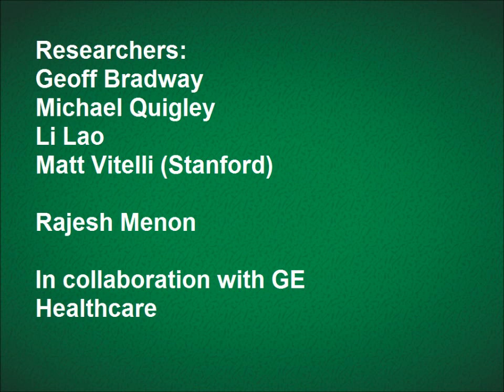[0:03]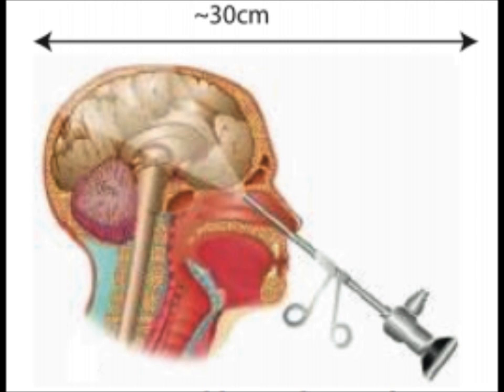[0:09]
In this project, we are interested in tracking the tip of a surgical instrument, such as an aspirator, within the volume of a human head. The volume of interest is approximately 30 centimeters by 30 centimeters by 30 centimeters. There are two relevant surgical instruments, and these are approximately 14 centimeters long.
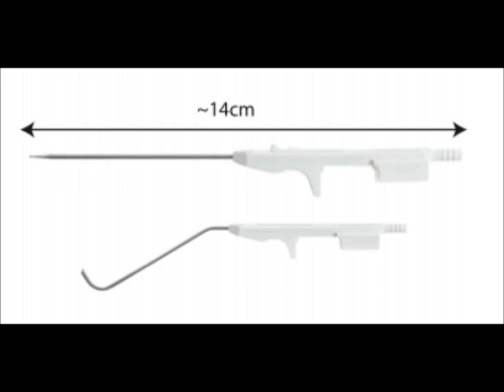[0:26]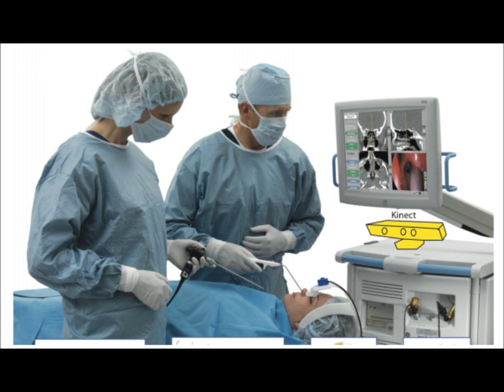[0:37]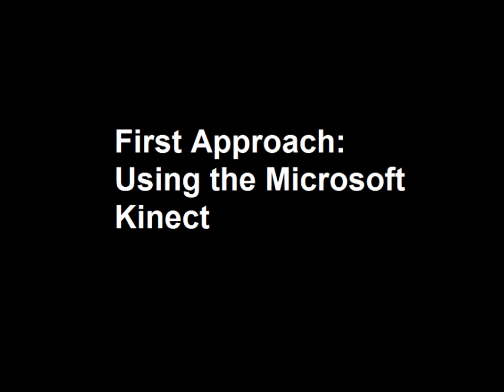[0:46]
The goal in this particular case is to track the tip of the instrument with an XYZ resolution of less than 1 millimeter. Our approach is to use a camera-based system mounted on the side table. The exact position on the table does not matter heavily, as we are able to take that into account with proper calibration. We used the following two camera-based approaches to try this.
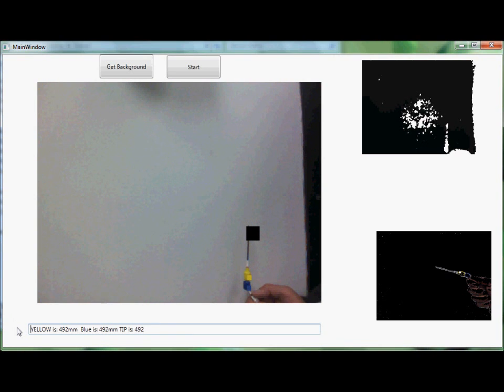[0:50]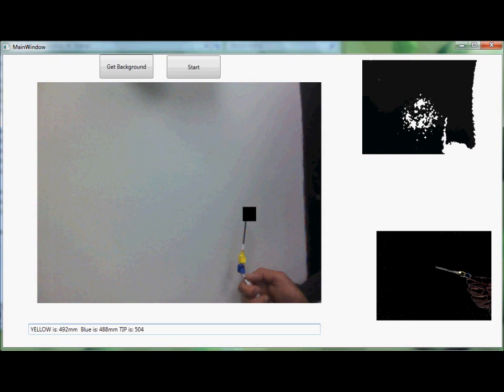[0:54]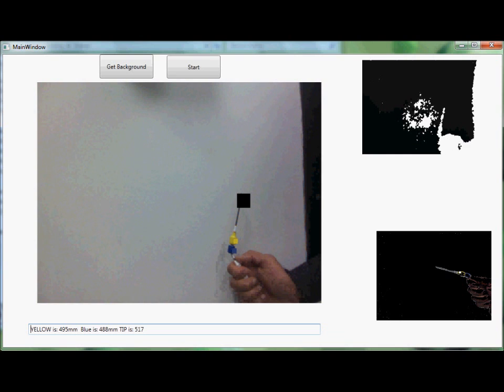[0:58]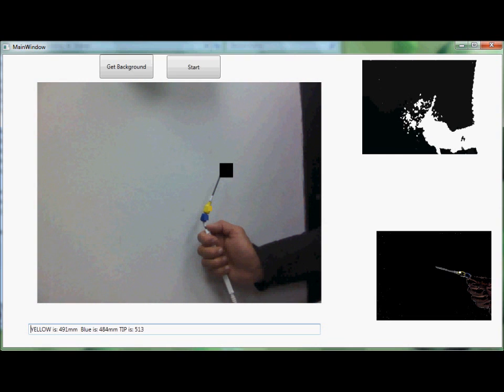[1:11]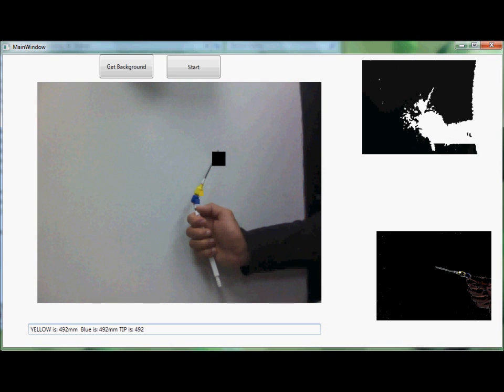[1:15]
The Kinect-based approach works as follows. First, we use Get Background to get a calibration image, so when we're looking for a color, we can ignore points of that color in the background. Then for each frame, we iterate through the image looking for yellow and blue, and we make a list of the XY coordinates of each yellow and blue pixel. Then after some noise filtering, we use the sample means as an estimator for the centers of the colored portion of the tool. This can be seen as the blue and yellow boxes imposed on the video stream.
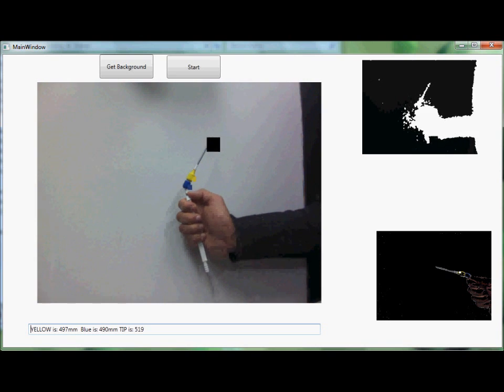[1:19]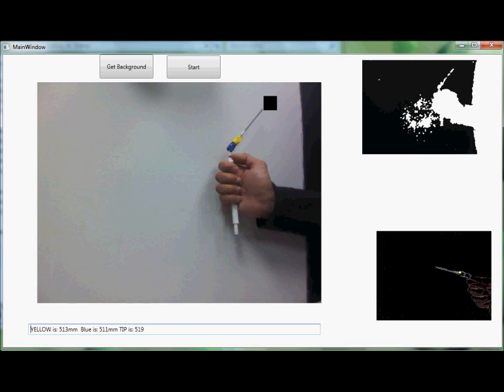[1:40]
Next, we look up the corresponding z-coordinate from the Kinect depth sensor. Finally, with the x, y, and z estimators for the two points, and the fact that the tool is rigid, we can interpolate the location of the tip, which is seen as the black box. The main drawback of this method is that the depth data, which can be seen in the upper right-hand corner, is somewhat noisy and low resolution. So while the XY estimators are fairly accurate, the tip position is fairly noisy.
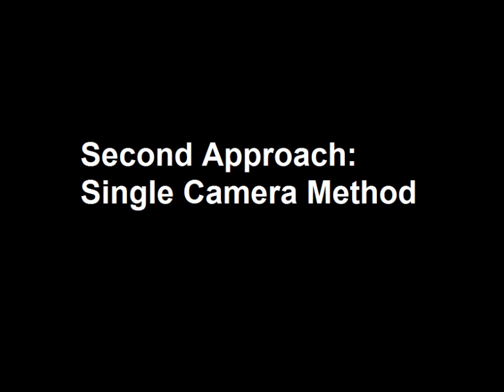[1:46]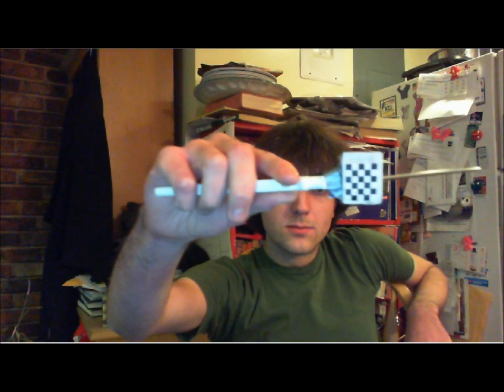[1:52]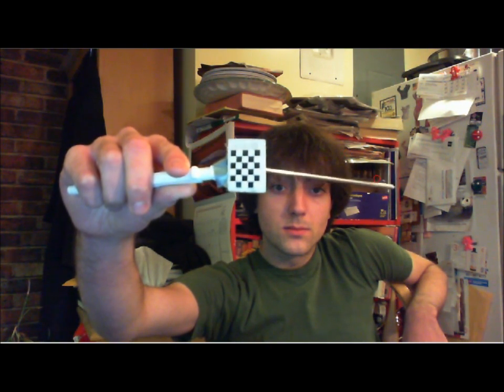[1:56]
Using an off-the-shelf webcam, we are able to infer the tip of the instrument by tracking a known calibration object. We calibrate the camera in an offline process in which we take multiple pictures of a known object, in this case, a chessboard. Next, we calibrate the position of the tip of the instrument with respect to a stationary frame before running the application. We compute the extrinsic parameters of the calibration object for each image captured by the camera.
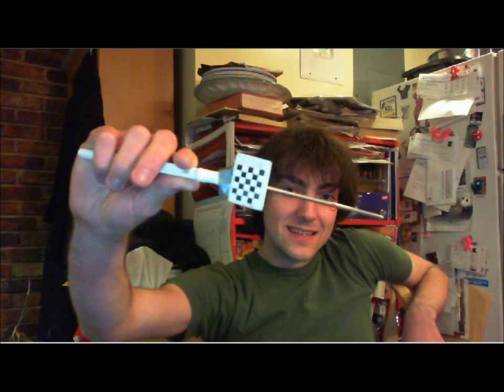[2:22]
The extrinsic parameters are essentially the position and orientation of the calibration object. By knowing the spatial relationship between the tip of the instrument and the calibration object, we are able to transform the point into the orientation and position estimated by the camera.
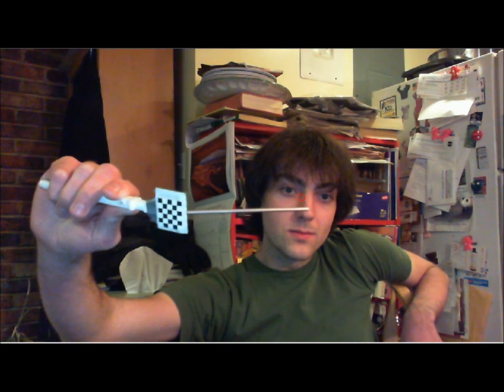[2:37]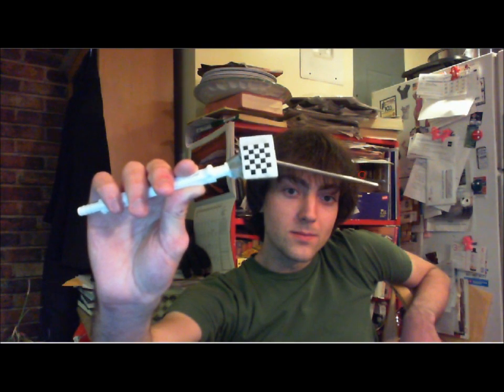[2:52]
This approach could be improved by using more cameras and additional calibration objects. As evident from the video, if the calibration object is not clearly visible, the approach fails. By using multiple markers at different views and positions, this increases the chances that the camera will find an accurate frame. This, in conjunction with multiple cameras, would allow for more accurate estimates for the tip of the instrument.